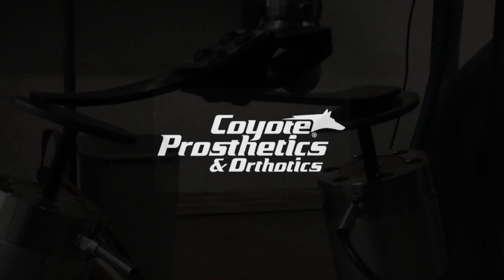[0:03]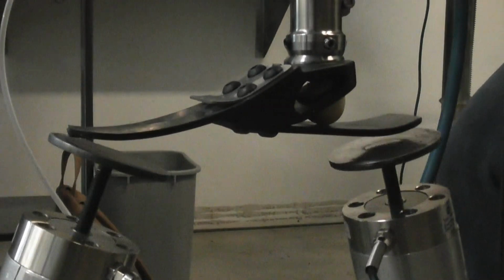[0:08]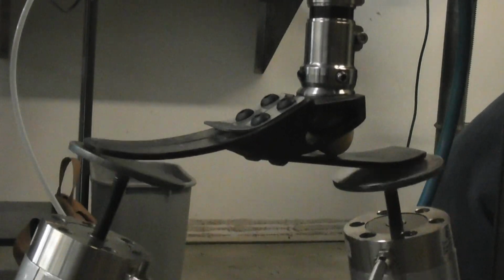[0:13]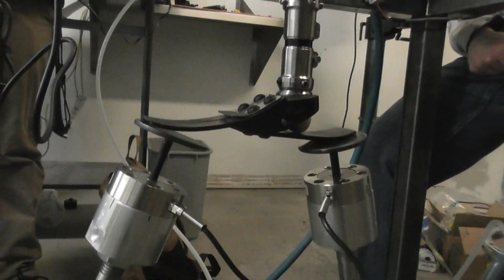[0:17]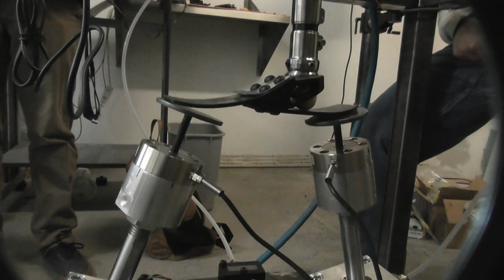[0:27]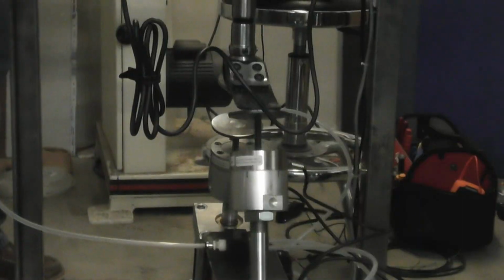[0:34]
Coyote Prosthetics, a Boise-based prosthetics manufacturer, needed an affordable solution for structural testing of prosthetic feet to meet ISO 10328 standards. These standards are vital to ensure the safety and durability of prosthetic devices, protecting against potential injury and litigation. Outsourcing this testing to third-party facilities was cost-prohibitive for the company, prompting the development of a custom-built testing machine. This machine incorporates linear actuators to apply static and cyclic loads and uses a microcontroller with Arduino interface to log data on force and cycle count.
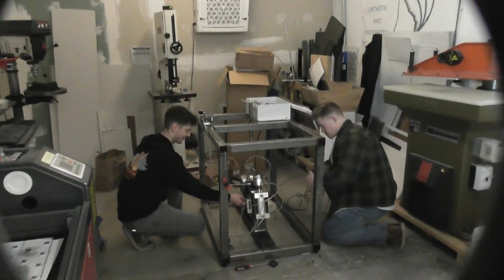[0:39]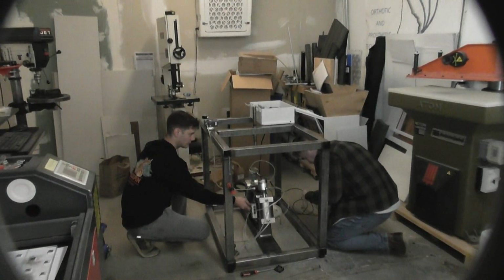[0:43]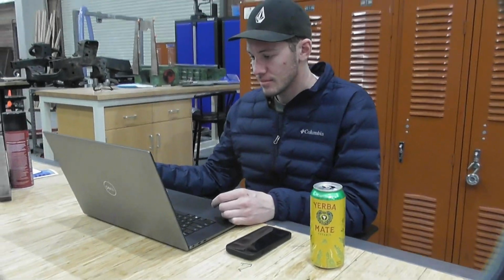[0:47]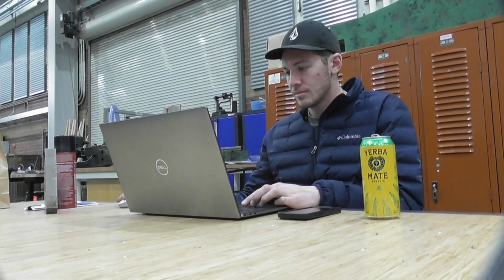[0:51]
The design offers a cost-effective in-house solution for testing various prosthetic foot sizes, significantly reducing testing expenses while enhancing operational efficiency. To ensure durability over 2 million test cycles, we built the frame using welded steel box tubing, designed to withstand high vibrations and loading forces.
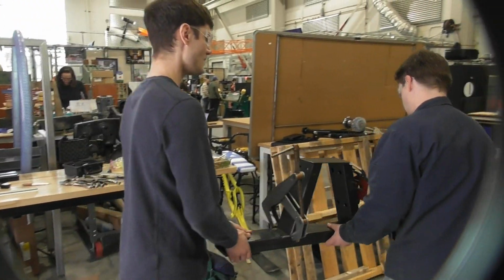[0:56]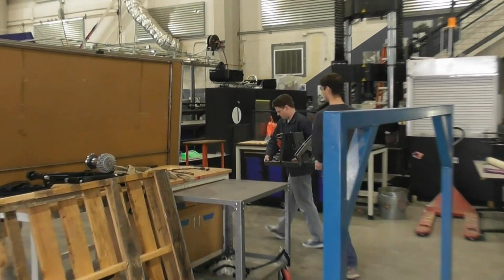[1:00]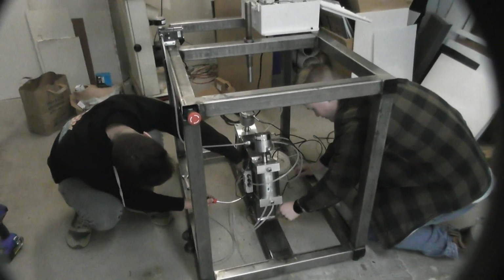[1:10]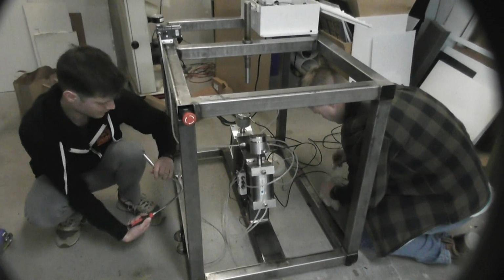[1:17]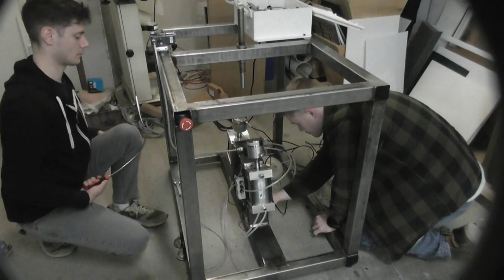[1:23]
Our design accommodates various prosthetic foot sizes and testing forces through multiple adjustable components. The mounting rod can be repositioned, the actuator stroke length is adjustable, and heel and toe plates have multiple levels of adjustability. Additionally, we designed the frame with extra space to prevent components from being crammed together, allowing for easier maintenance and adjustments. The overall frame dimensions are also within the size limits specified by our sponsor, Coyote Prosthetics.
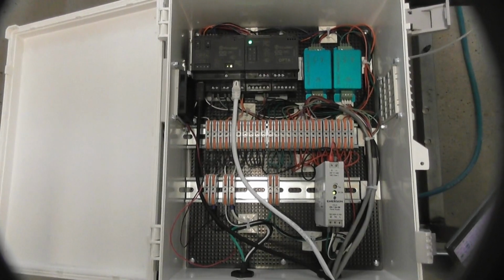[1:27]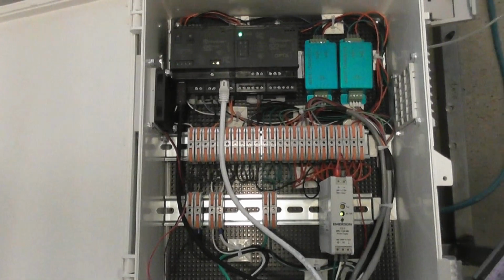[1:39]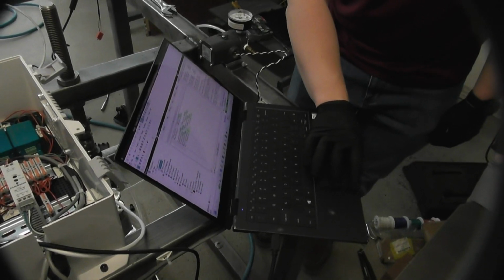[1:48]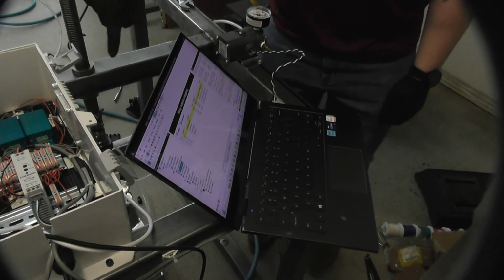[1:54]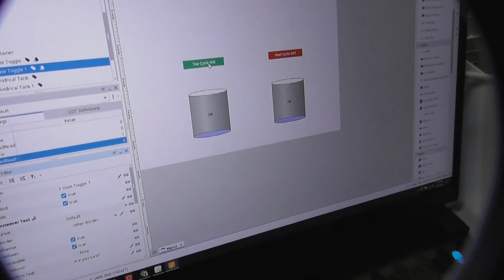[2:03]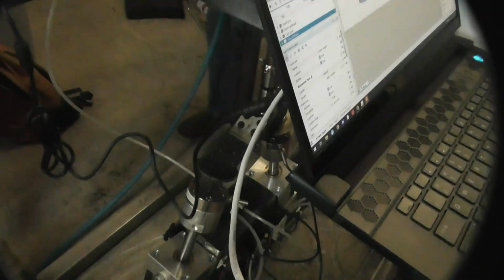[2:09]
Our design implements an Arduino Opta PLC that allows analog control of our industrial components and supports feedback from onboard instrumentation such as the electronic pressure regulator and 2 piezoelectric load cells. To maximize the capabilities of an electronically controlled system, we additionally opted to use electronic double-acting solenoids to provide control capabilities to our pneumatic actuators. The selection of these components gives us the greatest flexibility to include data logging, precise control, and test validation throughout the life cycle of the device. The human-machine interface software, Ignition, grants the user the option for complete hands-off automation or more direct hands-on operation of the machine, depending on their preferred testing criteria.
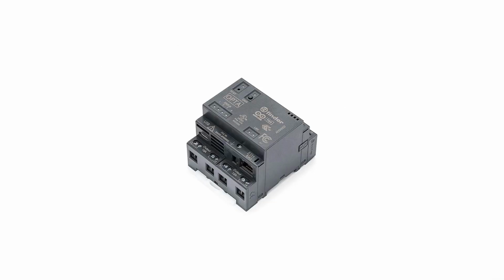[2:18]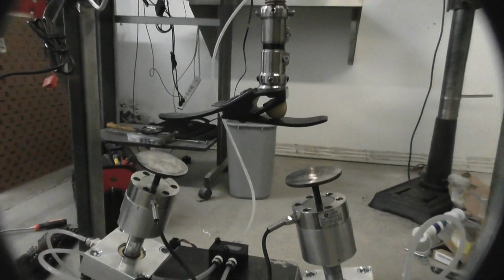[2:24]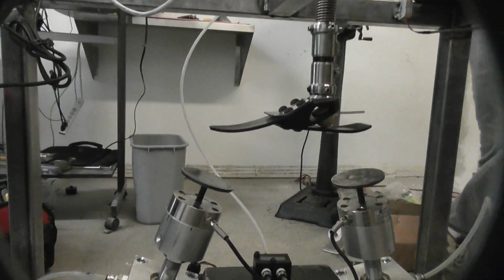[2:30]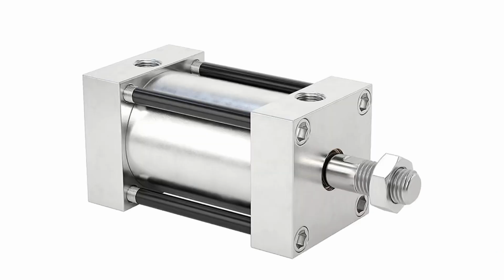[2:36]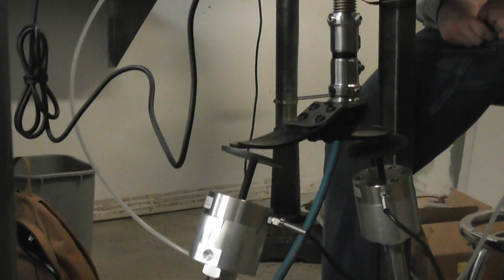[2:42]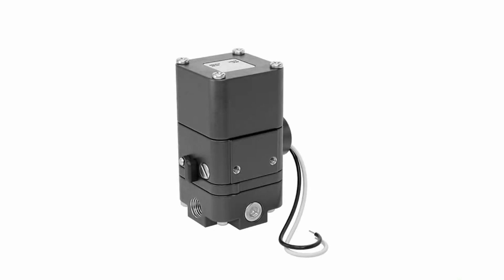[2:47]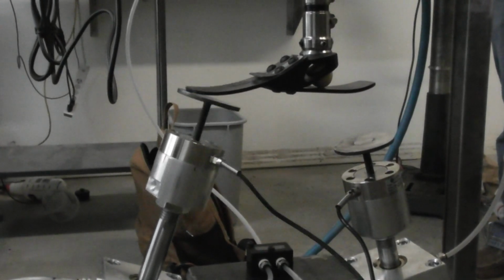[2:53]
Our main driving components that make our device run consisted of pneumatic actuators, load cells, and an Arduino PLC, with of course additional supporting components. Pneumatic actuators provide forces that are applied to the prosthetic foot via compressed air. Load cells read and send the forces measured back to the PLC. Solenoid valves control the airflow to the pneumatic actuators by using an electrical signal to open or close the air supply, allowing for precise regulation of force application during testing. Air regulator maintains a consistent and adjustable air pressure to the pneumatic actuators, ensuring precise force application for accurate and repeatable prosthetic foot testing.
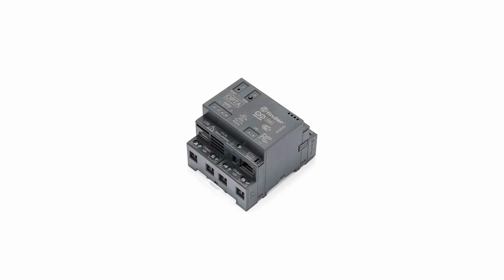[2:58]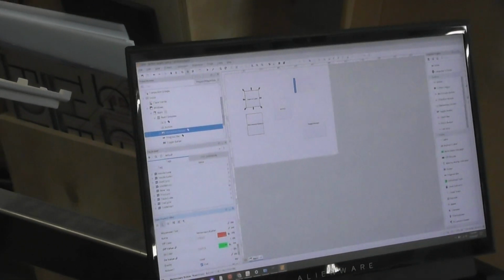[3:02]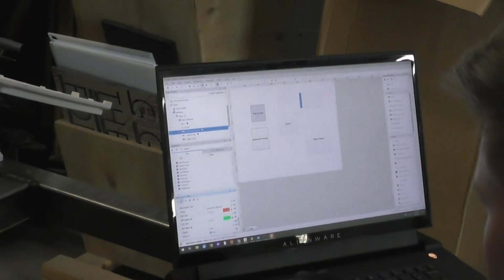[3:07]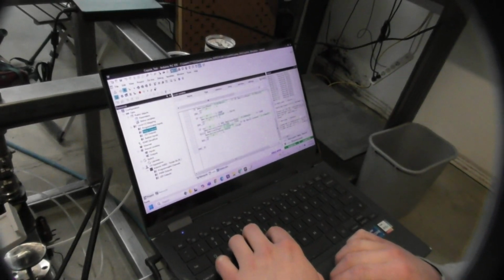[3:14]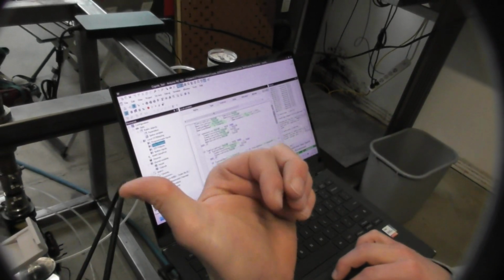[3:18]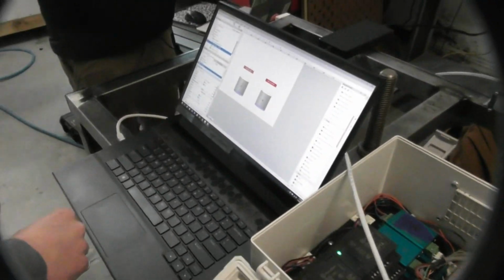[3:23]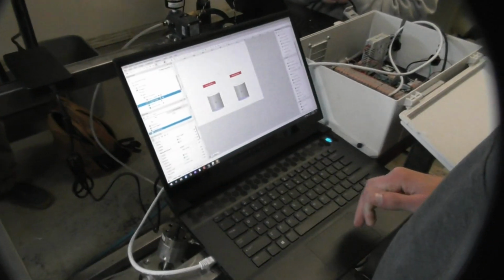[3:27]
The Arduino Opta PLC with an analog extension, paired with Ignition for a human-machine interface, creates a powerful and flexible automation solution. This PLC delivers reliable control with digital and analog I/O for seamless integration. When combined with Ignition's web-based HMI, users gain interface monitoring, remote access, and control. This setup ensures efficient data tracking, actuator management, and alarm handling, making it a high-performance solution for industrial automation.
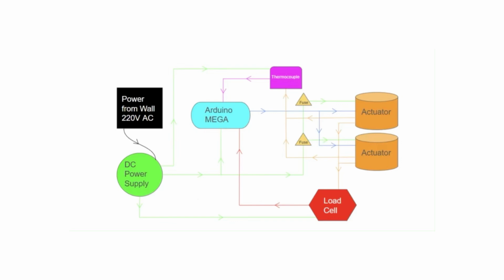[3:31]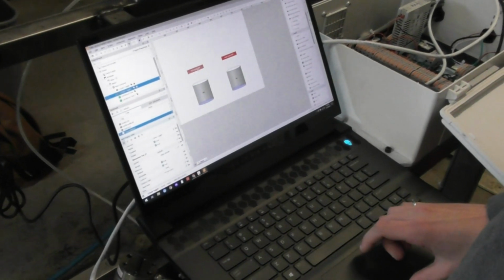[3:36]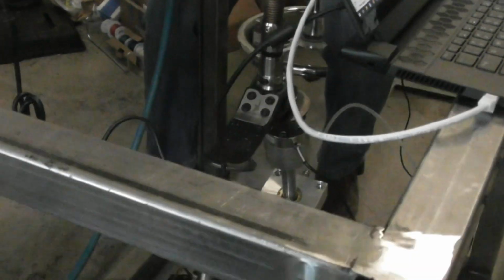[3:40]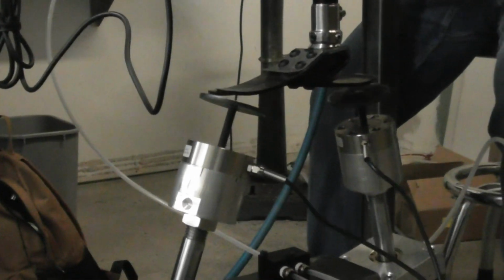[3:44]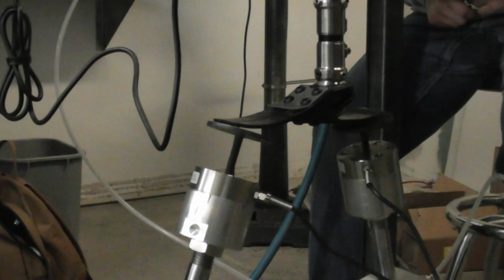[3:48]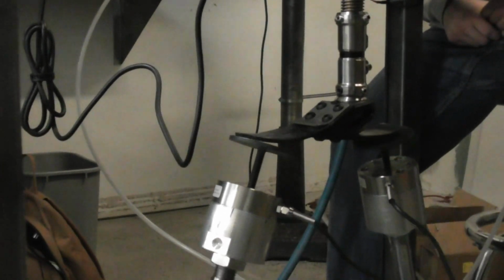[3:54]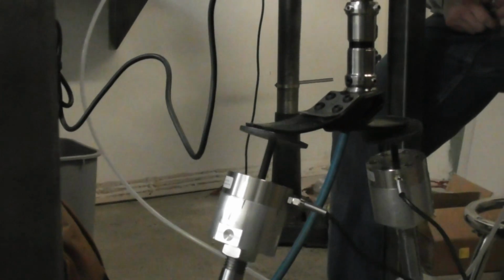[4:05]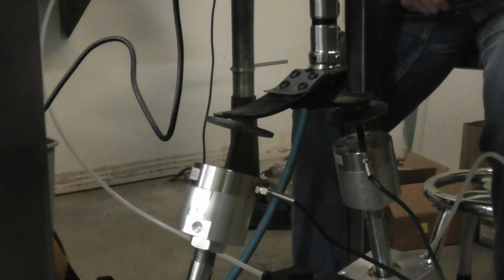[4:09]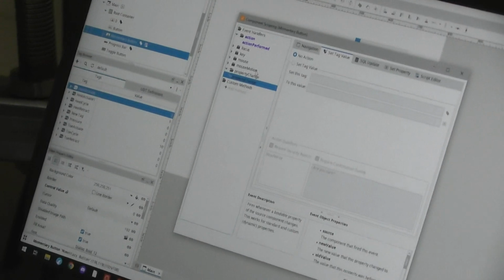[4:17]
When integrating load cell amplifiers into our system, we ensure precise and reliable force measurement, feeding accurate data to our PLC for real-time processing. These amplifiers transfer a millivolt signal generated by the load cells into a voltage that is readable by the PLC. A stable power supply is critical, guaranteeing consistent performance without signal fluctuations. Safety also remains a top priority, which is why we've incorporated an emergency off button. In the event of an unexpected situation, this instantly halts actuation and testing, protecting both the user and surrounding personnel. In the event of our emergency power button being hit, all of our data is saved on both the PLC and Ignition as well. Our system is designed for precision, efficiency, and above all, safety.
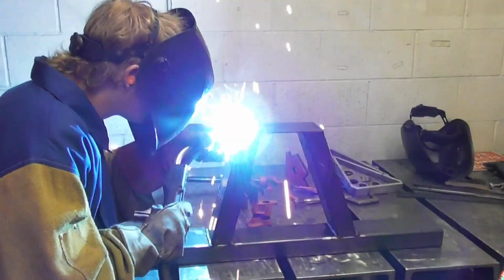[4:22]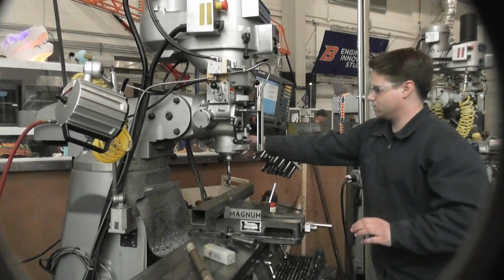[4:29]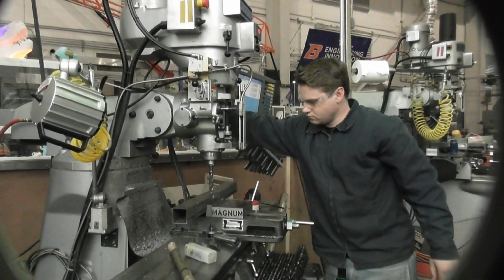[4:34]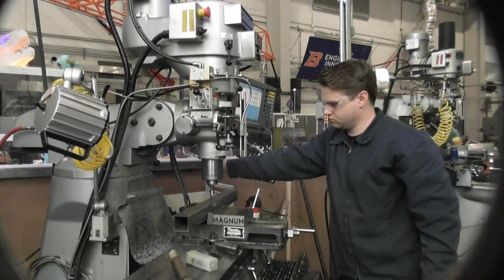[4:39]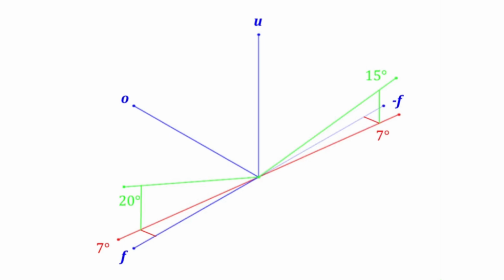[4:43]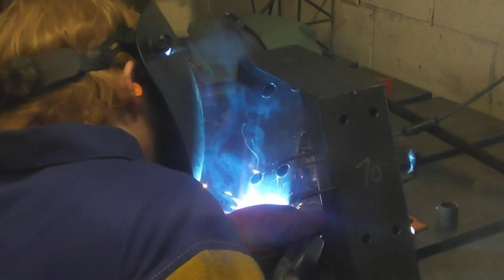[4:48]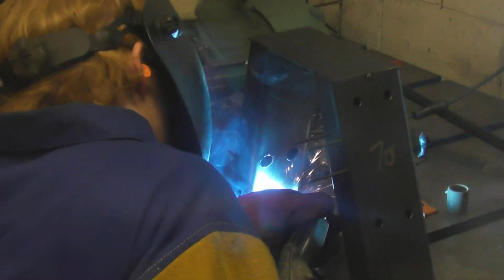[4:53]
To ensure a precise and sturdy frame, we welded steel tubing while maintaining strict tolerances within 0.2 millimeters and 0.2 degrees. We exclusively used machine shop tools like the bandsaw, mill, and MIG welder to achieve accurate angles for the heel and toe actuator supports. CNC milling was used to ensure the holes were precisely drilled in the correct position and depth. The ISO document ensures safety and highlights that the test must conform to high standards, obtaining data within the allowable degrees and measurements set forth by ISO. Accuracy of manufacturing methods was immensely considered.
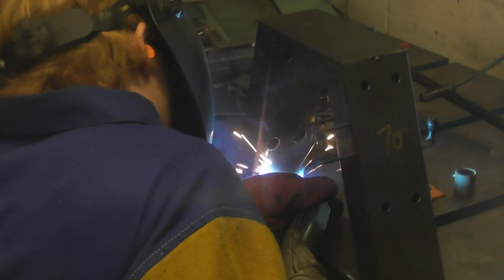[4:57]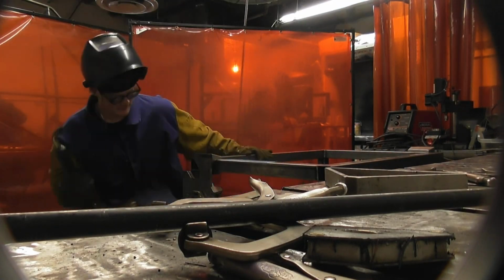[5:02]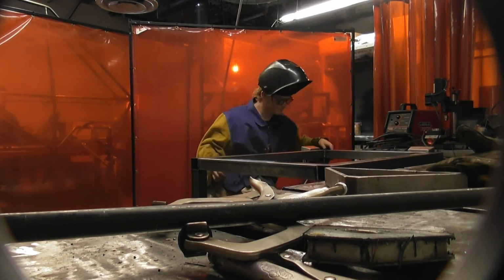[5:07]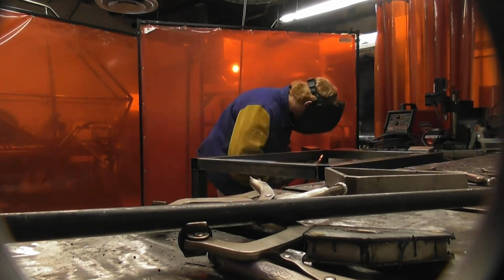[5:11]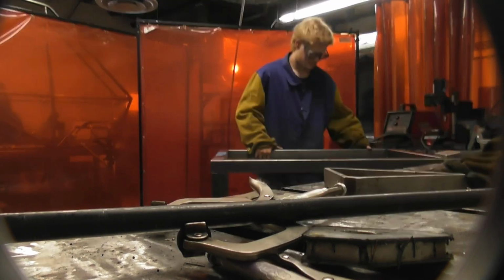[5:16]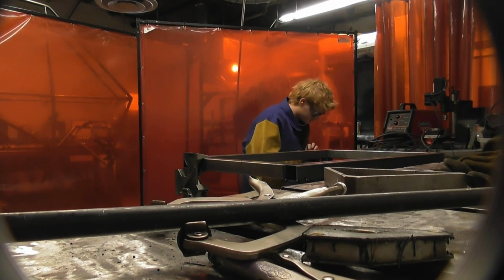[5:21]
Our actuator supports presented a lot of importance for accuracy of the project. Cutting accurate angles took a few tries. Metal distortion was a major concern that would cause inaccurate dimensions and angles, especially at the actuator supports. To avoid major expansion and contractions, jigs were incorporated within the pre-welding process. Testing assemblies were made to fine-tune welding and fixturing. The final product took a few tries, but our team was persistent and was able to meet ISO 10328 tolerances without requiring more material to be ordered from our sponsor, and scrap was utilized from the machine shop to further
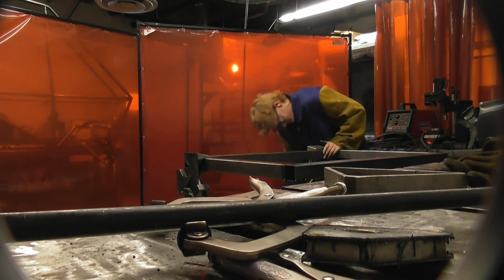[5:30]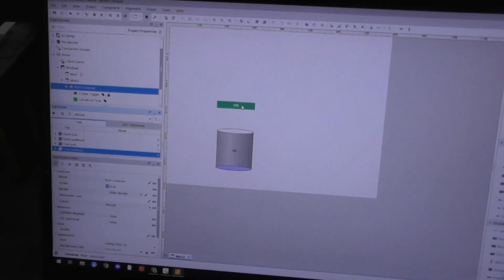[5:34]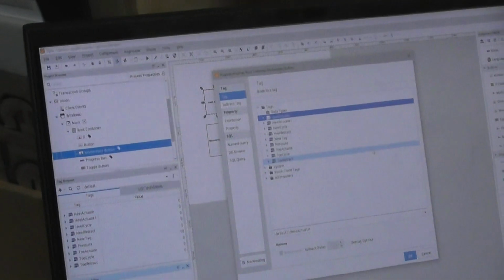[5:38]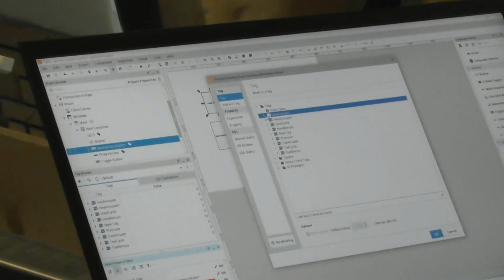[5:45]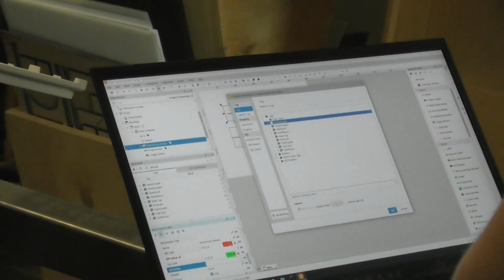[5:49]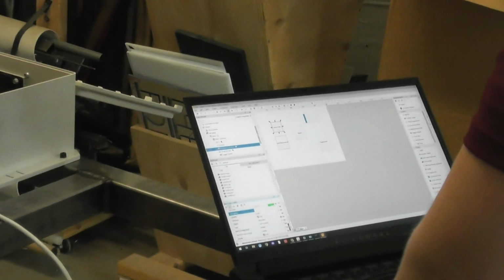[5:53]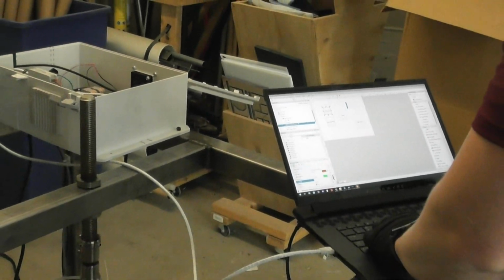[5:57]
avoid additional costs. We encountered a challenge when integrating our load cells, as we initially struggled to process the 5-wire analog signal properly. The load cells work by generating an electrical signal when placed under mechanical stress. This is done by a quartz crystal that is within the load cells and many alike. The electrical signal generated is too small for our system to recognize. The amplifiers we found give us a plug-and-play solution to read the signal from these load cells. Now we'll demonstrate the device in action.
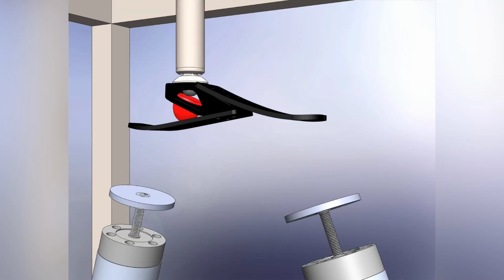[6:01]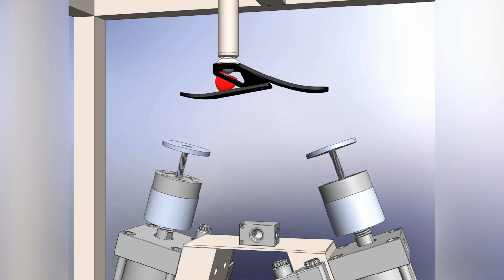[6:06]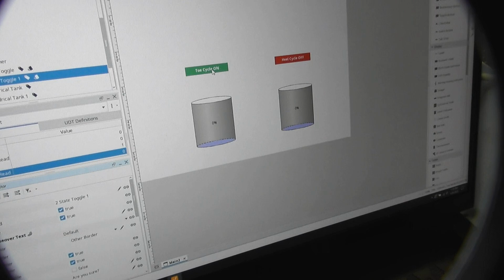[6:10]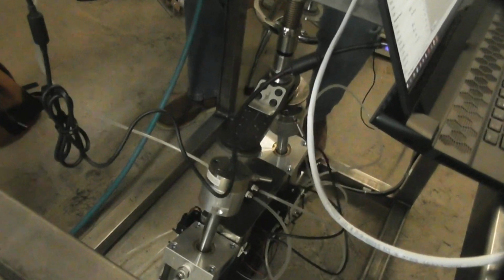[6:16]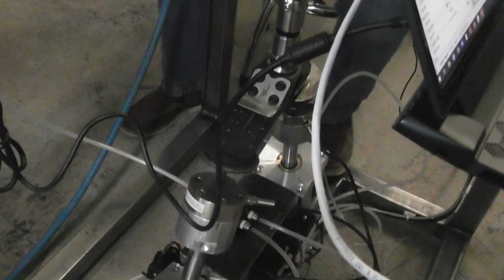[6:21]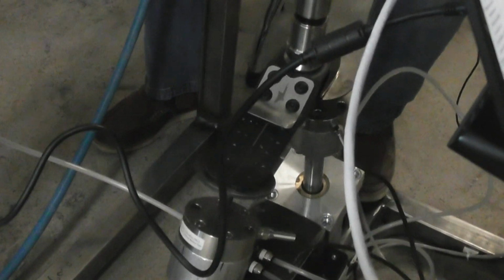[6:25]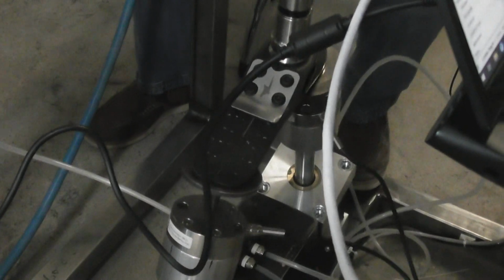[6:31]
First, the operator loads the test sample into the device by sliding the collar over the support shaft and tightening the set screws. The operator will then initiate the test cycle via the interface, either utilizing the fully automated controls or via the manual override operation. If automated control is selected, the device will conduct a cyclic test of the sample in compliance with our ISO standard, ISO 10328. You can see here the smooth operation of the pneumatic actuators, fully able to meet the functional requirements of the ISO standard.
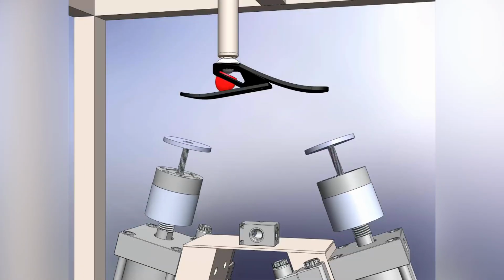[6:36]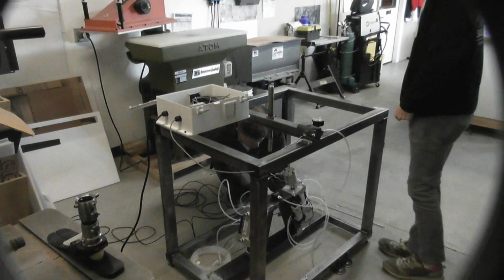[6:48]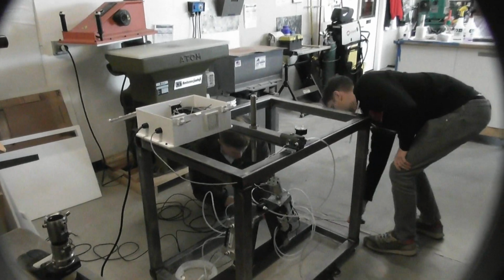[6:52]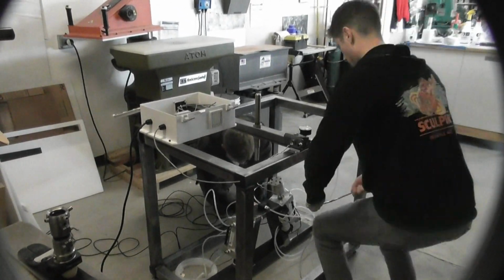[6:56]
In the event of device malfunction, part failure, or other catastrophic unplanned events during testing, the operator should use the emergency stop button, or EMO, to immediately cut power to the device, halting the operation of the test and movement of the actuators. We are incredibly proud of this project and how it brought together everything we've learned in our mechanical engineering education, from structural design and machining to electronics, coding, and pneumatics.
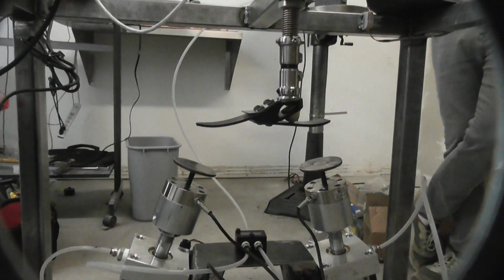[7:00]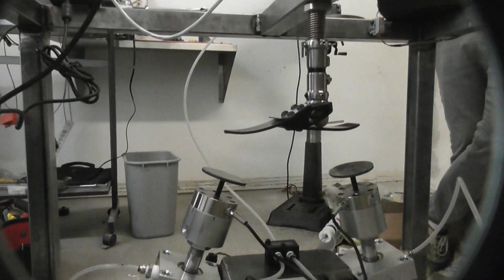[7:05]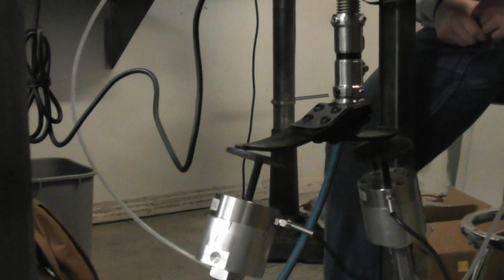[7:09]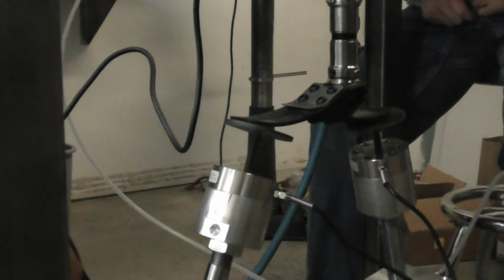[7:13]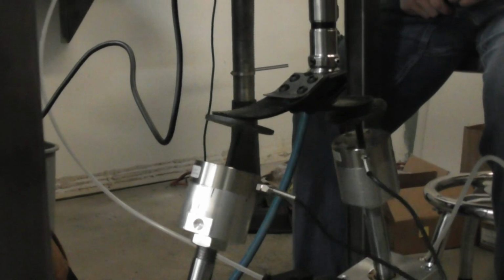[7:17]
This was truly a unique and specialized project, giving us hands-on experience solving real-world engineering challenges. A huge thank you to Coyote Prosthetics for this opportunity. Their support allowed us to develop a machine that will improve their testing capabilities while giving us invaluable experience applying our skills in a meaningful way. This project was the perfect culmination of our time at Boise State.
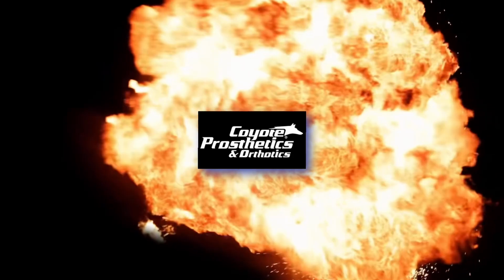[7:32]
Then you drop 'em, you can't man 'em, then you mop 'em, you can't stand 'em, then you drop 'em, you pop 'em, 'cause we pop 'em like over red and vodka.